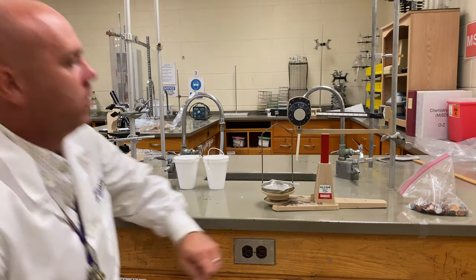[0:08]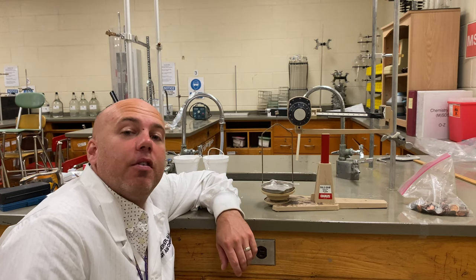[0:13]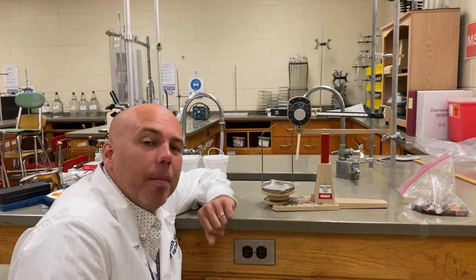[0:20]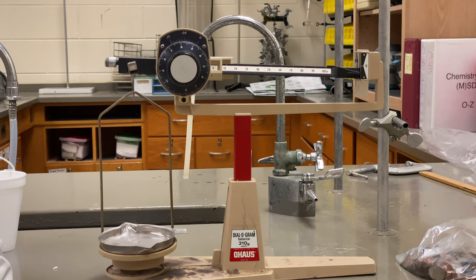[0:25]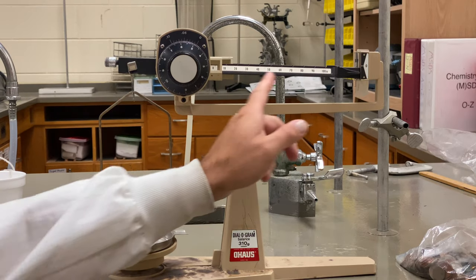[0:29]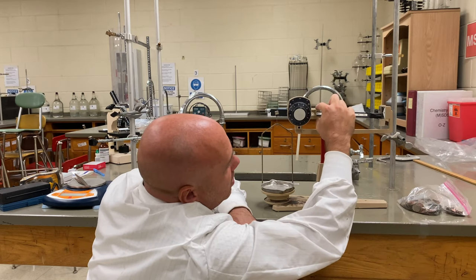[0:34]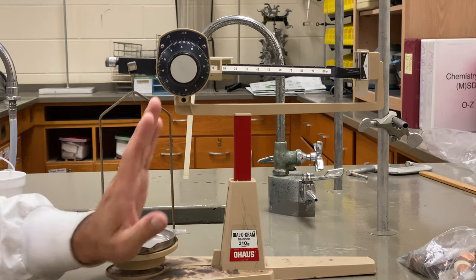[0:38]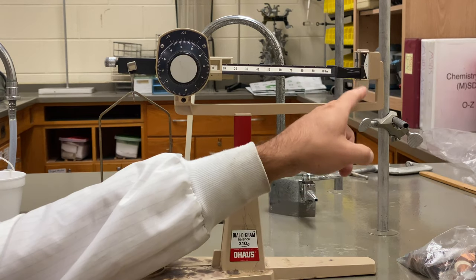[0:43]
Back before modern technology, scientists used to make their own equipment, including mass balances. But a mass balance is not really that complicated. They're made up of a few parts. They have a weighing pan on which we weigh the sample. They have a beam with some standard weights that slide across the beam. Then there's a fulcrum on which the beam balances. And last, there's a pointer on which to make the measurement.
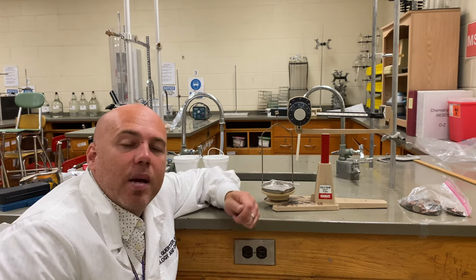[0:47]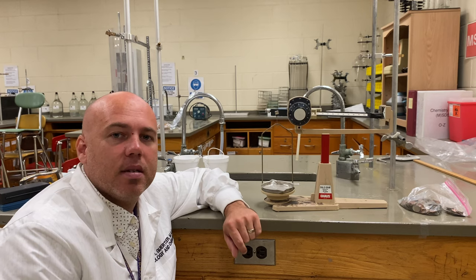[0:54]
Weighing samples in chemistry is important. We obtain chemicals all the time as chemists, and we need to know how much of the substance we have, so we take the mass.
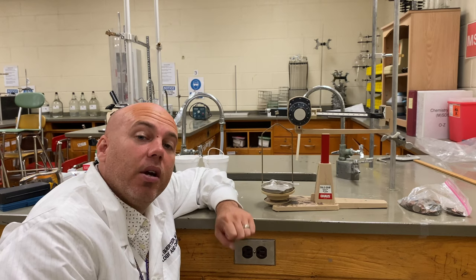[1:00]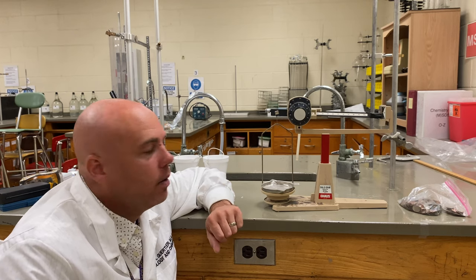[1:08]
You're going to be doing a year-long science project, and you are going to need a mass balance. You can't afford a $1,000 mass balance. I know I can't. The school buys ours for us. And so what you're going to do is make your own at home. And you'll be surprised at how accurate they can be.
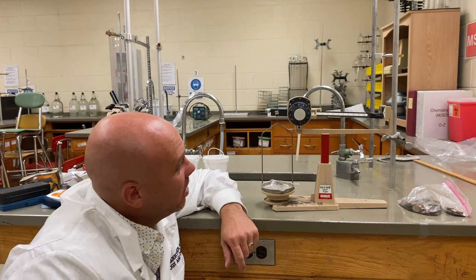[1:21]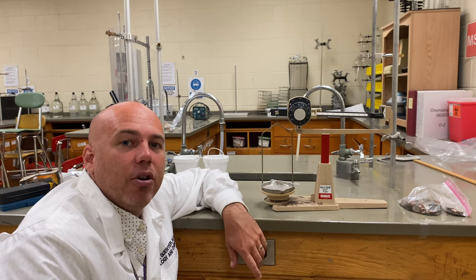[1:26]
You may be thinking, well, this looks pretty complicated. It doesn't have to be. In fact, I'm going to show you how you can make a mass balance with common items that you can find at your own home.
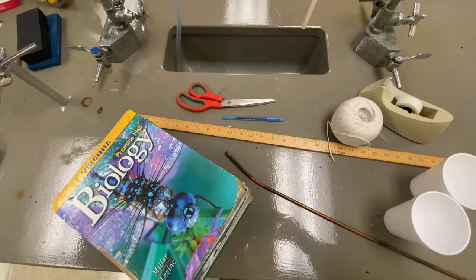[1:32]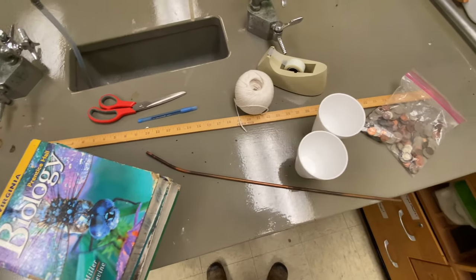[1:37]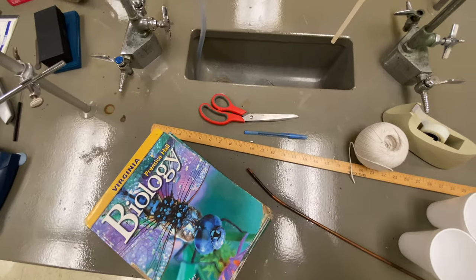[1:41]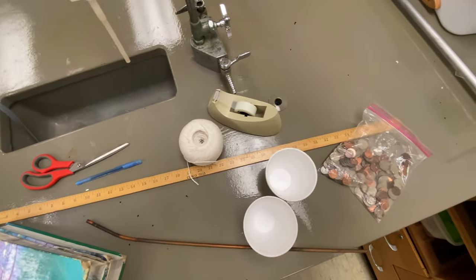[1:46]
All right, so you're going to need some textbooks, a bunch of them, or some big heavy books. You're going to need a ruler stick or a meter stick. You need some kind of long skinny rod or pole. You'll need some scissors, a pen, some string, styrofoam cups, tape, and a bag of old change.
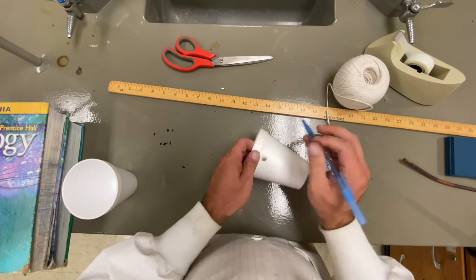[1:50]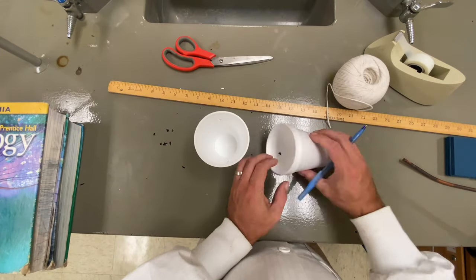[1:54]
All right, so the first thing you're going to do is take your styrofoam cups and poke some holes in them. Once you poke some holes in them, you're going to be making your little weigh boats.
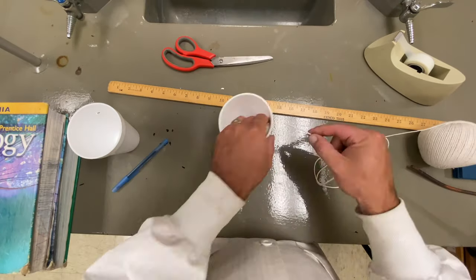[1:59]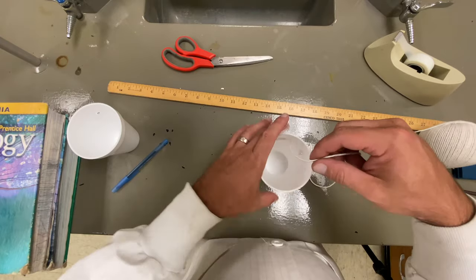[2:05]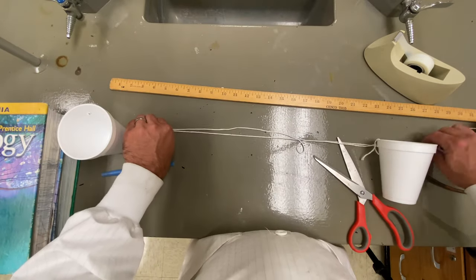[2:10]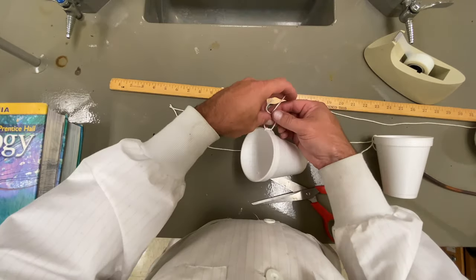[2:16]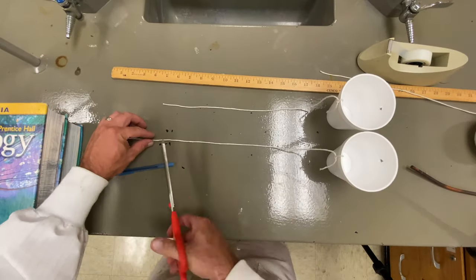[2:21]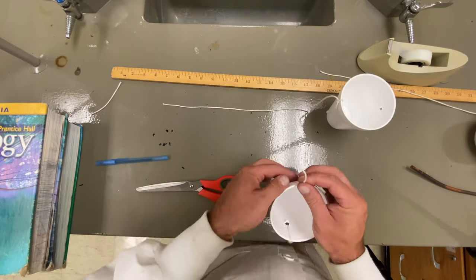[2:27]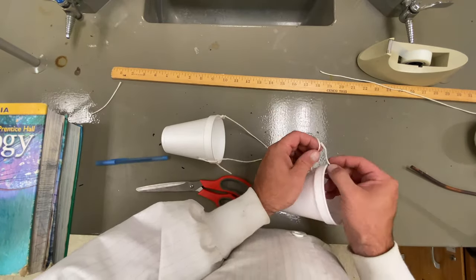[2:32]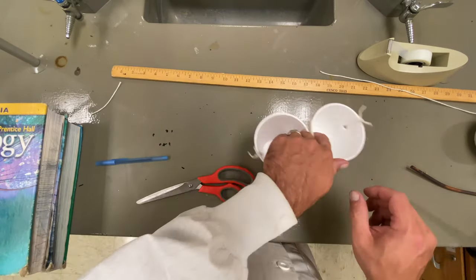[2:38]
Now, what you've got to do is take your string and get it the right length. You first tie a knot in one of your styrofoam cups. Then you take the string and stretch it out a certain length, to make sure that you have enough to cut another string for the other cup. Then you tie another knot in the other cup. Make sure your strings are about the same length for both cups. Once you have your string the same length for both cups, tie the knots off at the end of both cups, making sure that they're about the same size, and there you have both of your weigh boats with your strings attached.
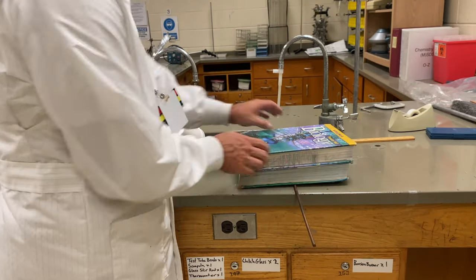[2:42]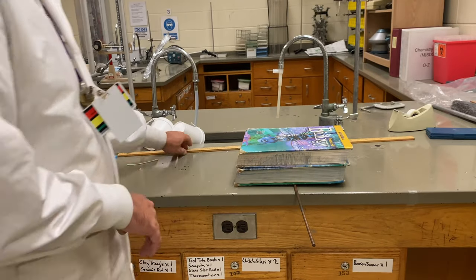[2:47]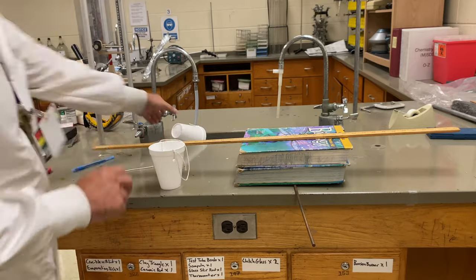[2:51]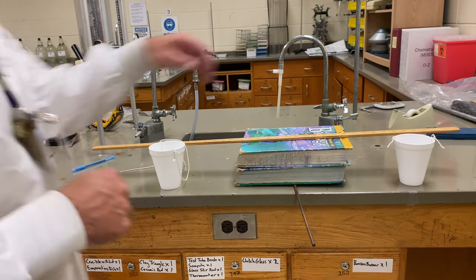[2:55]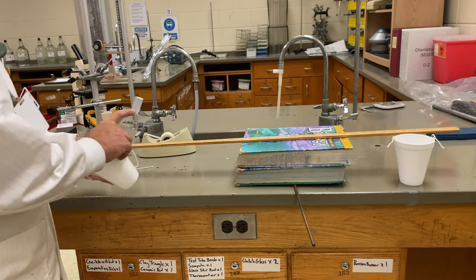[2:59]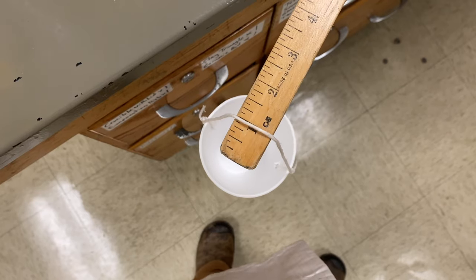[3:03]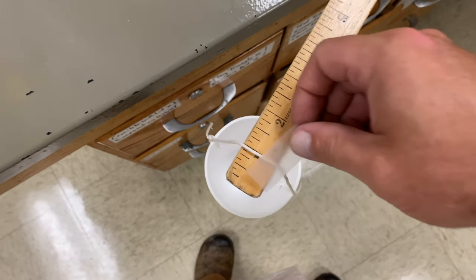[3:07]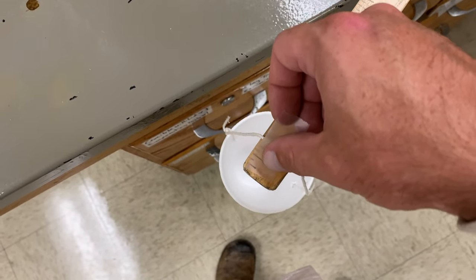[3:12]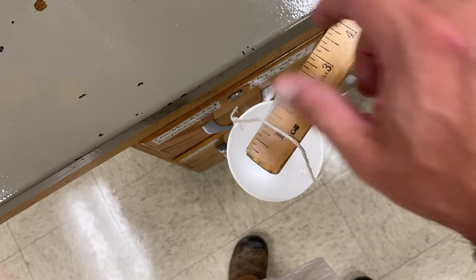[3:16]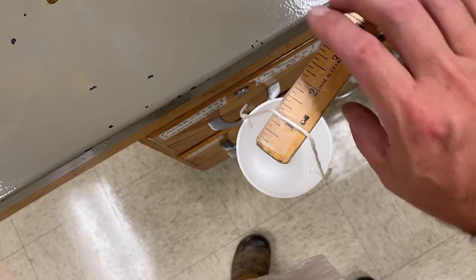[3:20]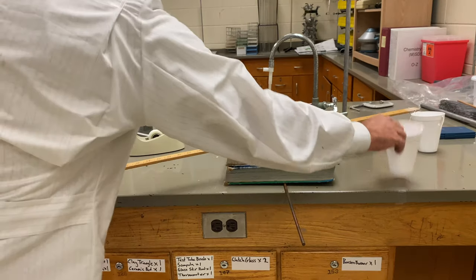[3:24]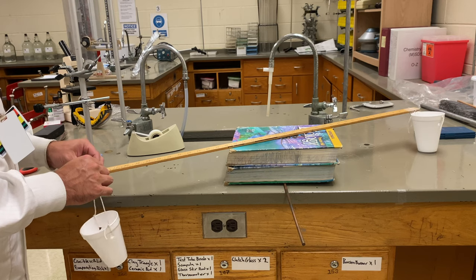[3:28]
If I tape the weigh boat an inch off the end of my meter stick or ruler here, I'm going to want to do the same thing off the other end of my meter stick for my other weigh boat. So I'm going to turn it around and do the same thing on the other end, and tape it about an inch off of this end.
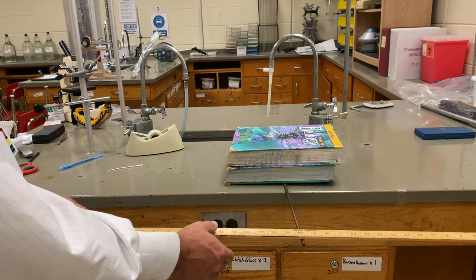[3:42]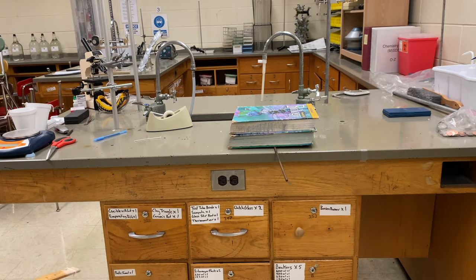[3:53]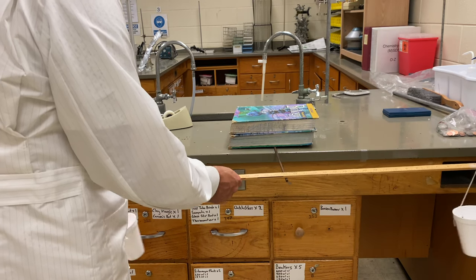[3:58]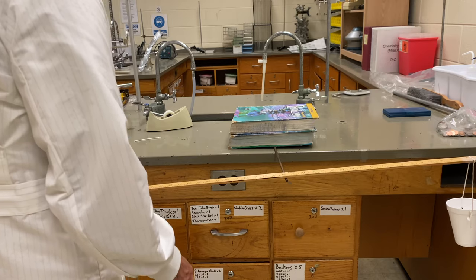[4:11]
Now that I've got my weigh boats attached to my meter stick, I'm going to position my meter stick with weigh boats on the pole, which is my fulcrum, to try to balance it out perfectly. It takes a little bit of practice. Once I've finally got it positioned perfectly, as you'll see me get right here, and perfect is relative, the longer your ruler or meter stick, the more accurate it's going to be, but also the more difficult. This is as good as I'm going to be able to get.
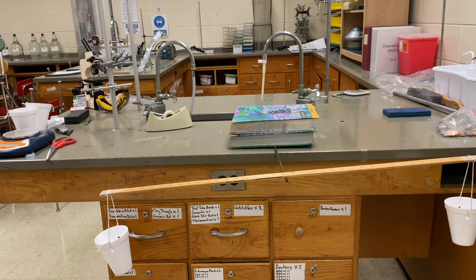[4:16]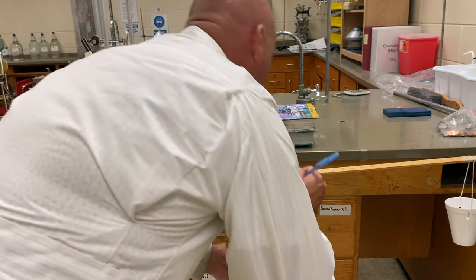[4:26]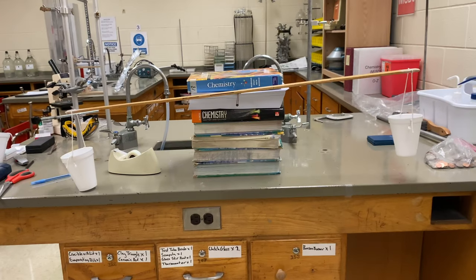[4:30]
I'm going to get a pen and mark right on my meter stick or my ruler where that position is, just in case I lose it, because it's very easy to have it slip off at this point in your project design. Once you've got that done, you want to move your setup to the top of the table with more textbooks so you can elevate it, just like you see.
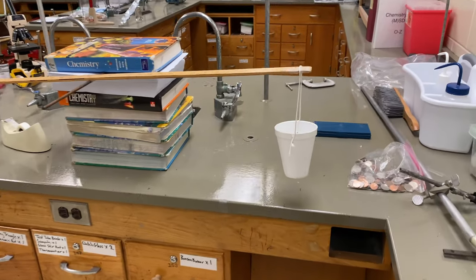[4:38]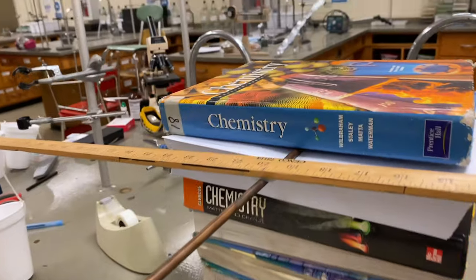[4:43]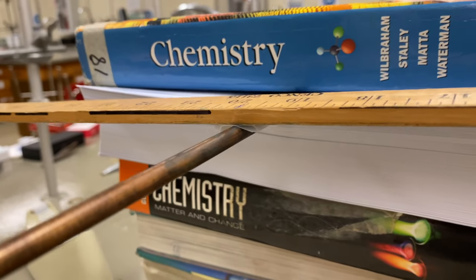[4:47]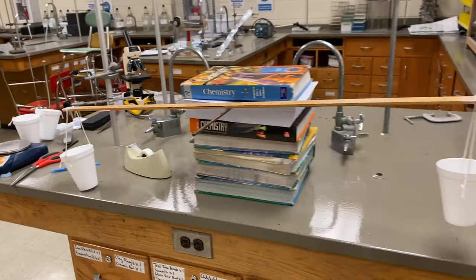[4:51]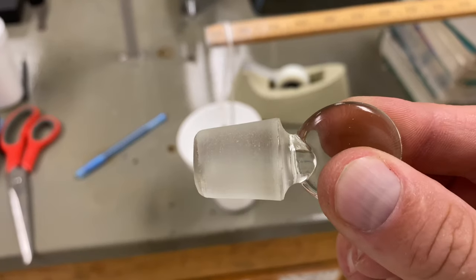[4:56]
The reason we elevate it is so that if it slips, the cup just kind of sits on the bench, just like you see, and your ruler or meter stick doesn't slide off the fulcrum. You see me put a piece of tape right under the fulcrum center point there so it doesn't slip. Now we're going to test out our mass balance to see how well it works.
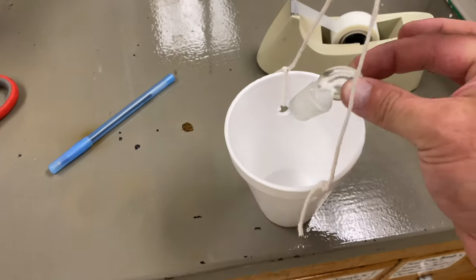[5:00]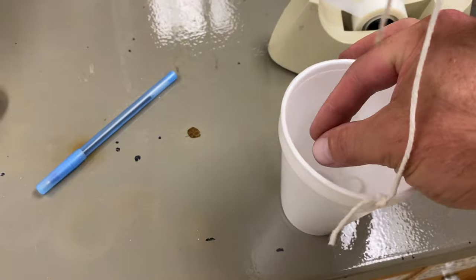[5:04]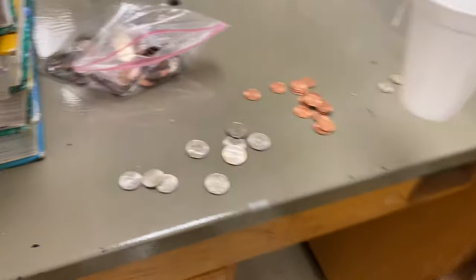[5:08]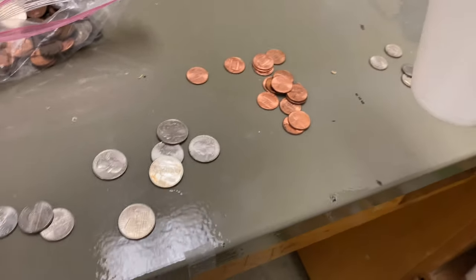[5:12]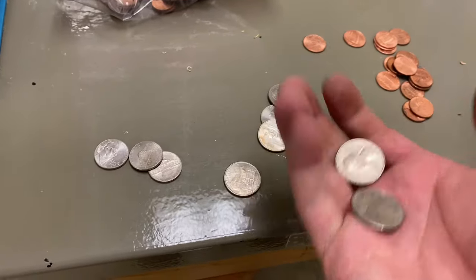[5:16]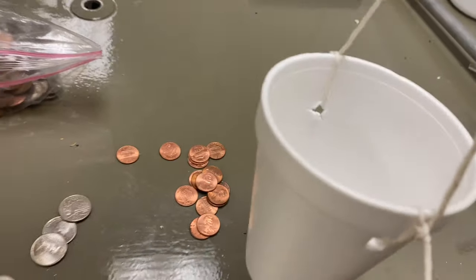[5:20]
This is a glass stopper we're going to try to find the mass of. So I'm going to put it in the weigh boat that is about touching the bench, and now I'm going to use my change. Change has standard weight. You can go to the U.S. Mint website, which I'm going to give you a chart for, and we can find the exact mass of each type of coin. So I'm going to put some quarters in here. I put two quarters in there.
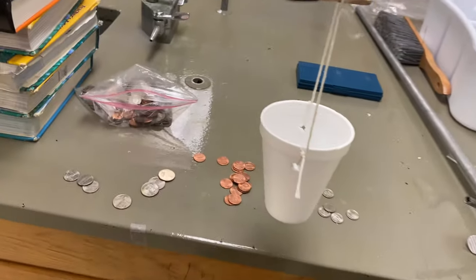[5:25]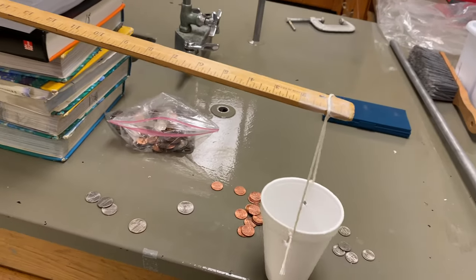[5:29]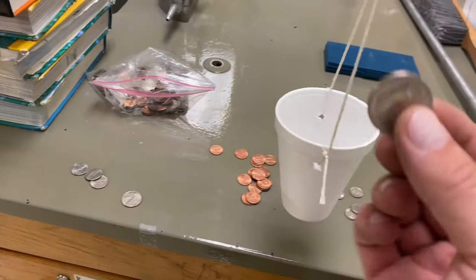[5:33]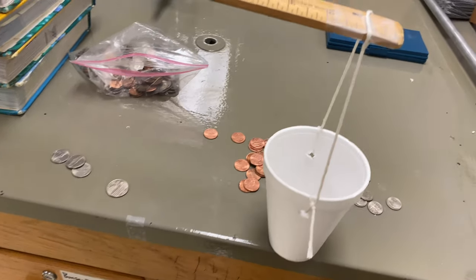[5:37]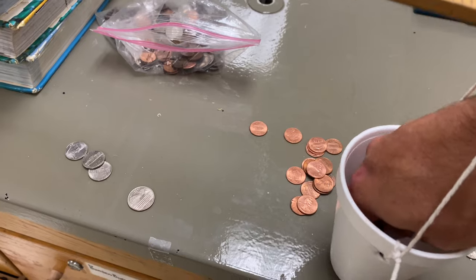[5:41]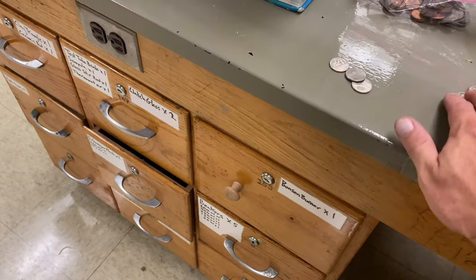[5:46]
We see it doesn't really pick up the glass weigh boat at all. So I'm going to take two more quarters. It looks like we're getting close. So if I take another quarter, oh, I went too far. So what I want to do now is take out that quarter without having my fulcrum get slipped off, so I have to be careful. So I've taken out my quarter. So we're at four quarters right now.
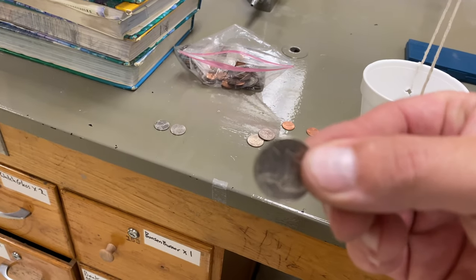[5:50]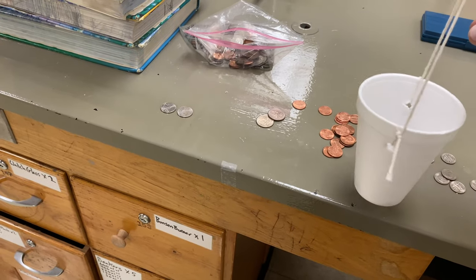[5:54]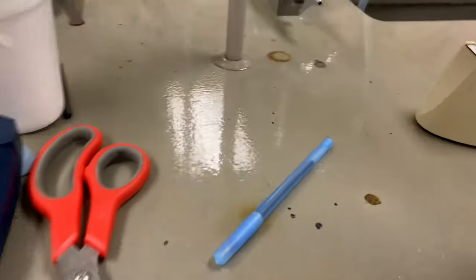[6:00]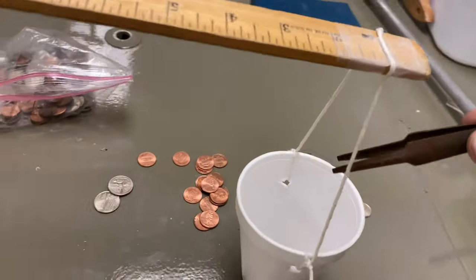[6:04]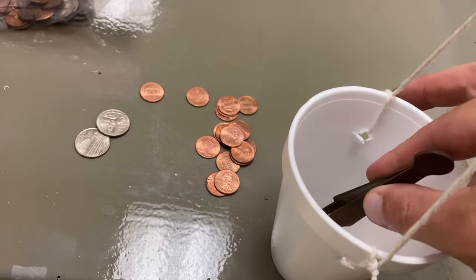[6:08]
And so I'm going to take a nickel. A nickel's a little less than a quarter. Oh, still went too far. So I got to get that nickel out. Nickel's positioned a little strange. So I'm going to get a set of forceps over here and see if I can pull it out. I don't want to pull my meter stick off the fulcrum and ruin everything. So I'm going to try to fish this thing out of here, at least get it in a position where I can then pull it out.
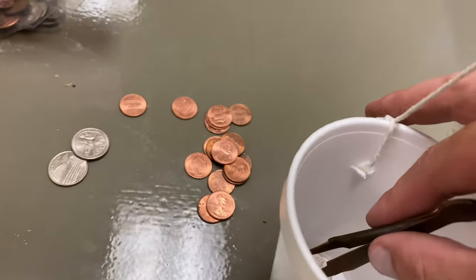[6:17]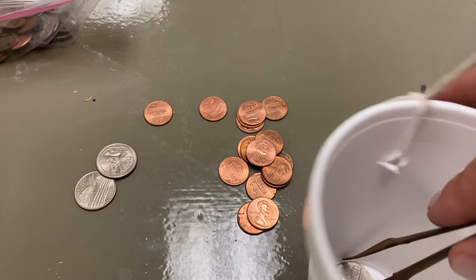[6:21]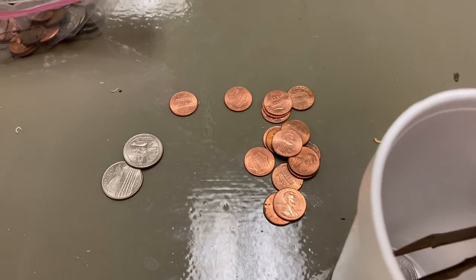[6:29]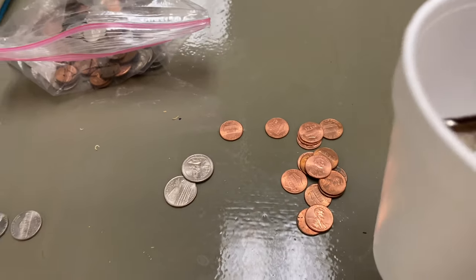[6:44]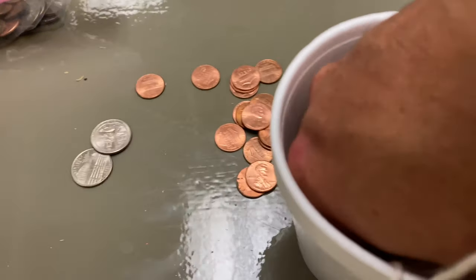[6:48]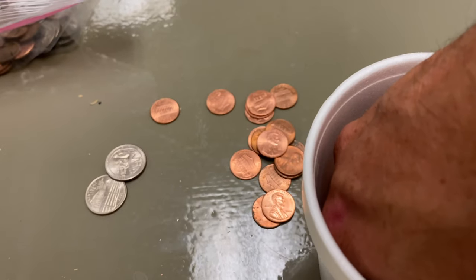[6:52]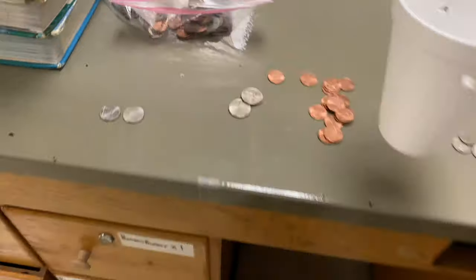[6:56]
Having a little difficulty here. You can see there is a reason why we have the modern technology that we have. It is easier to use. If I can get that thing lifted up on the edge, I can pull it out a little easier. There we go. Oh, I think I'm just going to reach in now and pull it out. Hopefully I don't mess it up. All right, success. We've got our nickel out, so we still have four quarters in there.
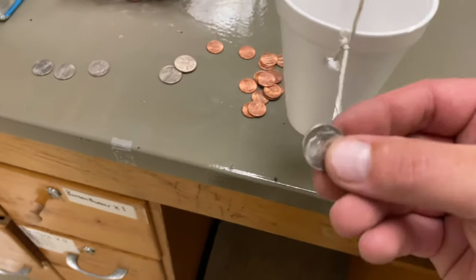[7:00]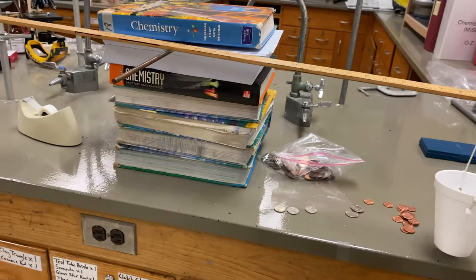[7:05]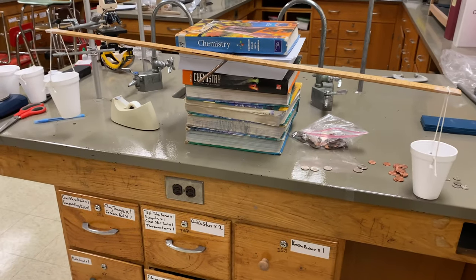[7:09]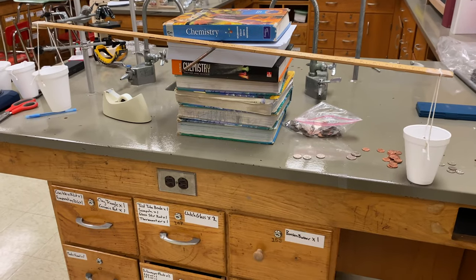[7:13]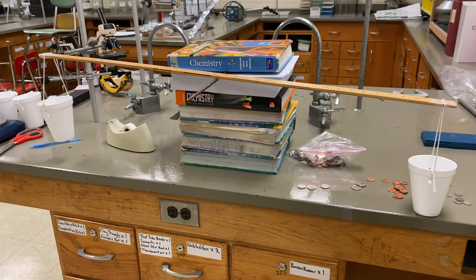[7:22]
Now let's go for the lightest one we have. It's a dime. And it's bouncing up and down a little bit, so we are really close there. Since that's the lightest piece of currency we have, we have to stop there. So we know it weighs somewhere between four quarters and four quarters and a dime. And so we can go back to our chart for the currency and figure it out from there.
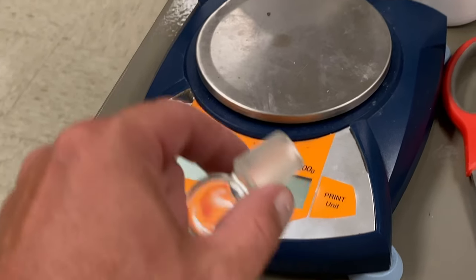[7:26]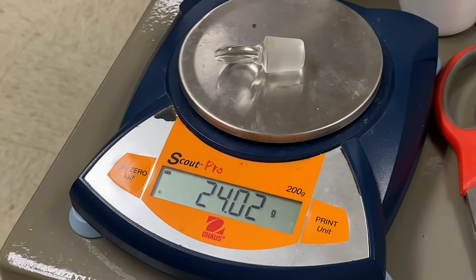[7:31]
Now, just so we know how we can compare our mass balance to the real thing, it looks like the glass stopper weighs 24.02 grams. All right, so we can see that the four quarters weighing 22.68 grams was just barely enough to tip the scale with the glass stopper in it. So by adding the one dime, which was 2.268 grams, we went over. So adding those two together, 24.95 grams was a little bit over the weight of the glass stopper.
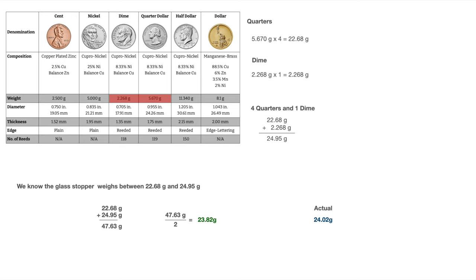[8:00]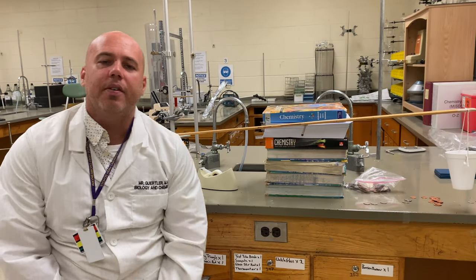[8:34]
So we know that the glass stopper was between 24.95 grams, which is a little bit over, and the 22.68 grams, which was just the weight of the four quarters. So we can accurately say that the weight was between 22.68 grams and 24.95 grams. If we average those two together, we get a weight of 23.82 grams, which is pretty darn good for a homemade mass balance when we know the actual weight was 24.02 grams. Not so bad. So there you have it.
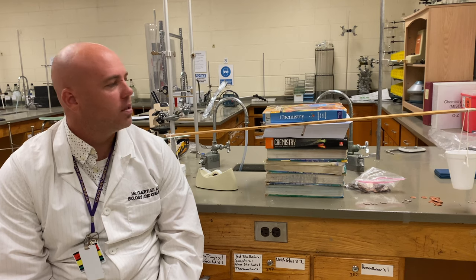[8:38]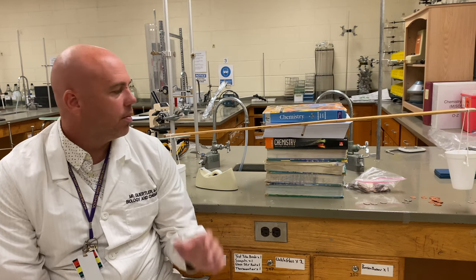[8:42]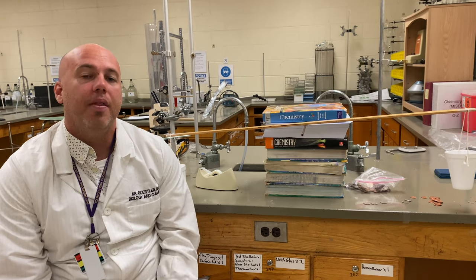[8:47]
You can make your own fully functional mass balance at home, just like the old scientists used to do. It predicted the mass of that glass stopper within a fairly decent margin of error. And that's all I really need you to be able to do. We need to be able to do fairly accurate and precise measurements with mass at home throughout the rest of the semester and for your science project.
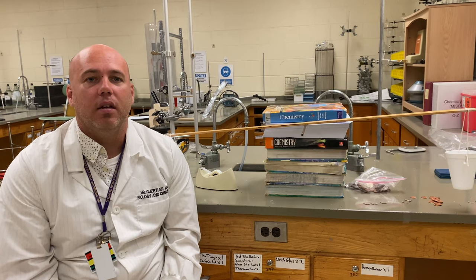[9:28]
So, you're welcome to deviate from the design a little bit as long as it's functional. There are tons of instructables and DIYs online on how to make your own mass balance. You're welcome to go all out and make yours fairly sophisticated and even more accurate and precise. You're welcome to just keep it simple. Just make sure it's functional, it does what you need it to do, and you have fun doing it, okay? So, please collaborate, ask for help if you need it, ask for my guidance, and inspire other classmates with your design.